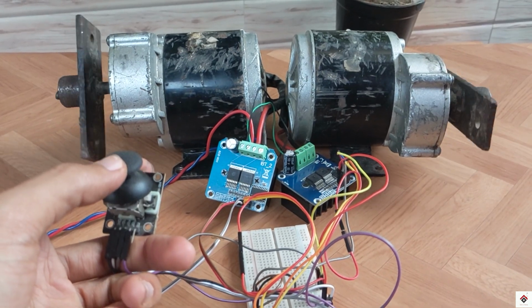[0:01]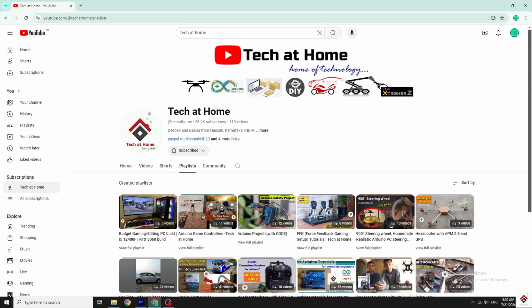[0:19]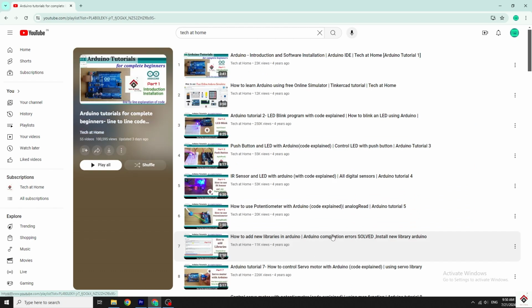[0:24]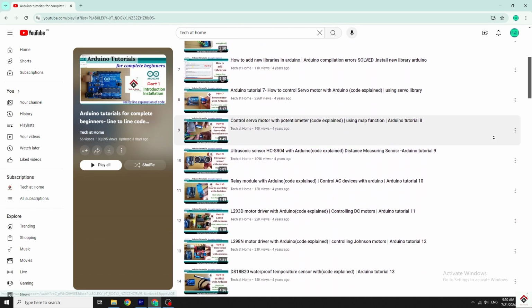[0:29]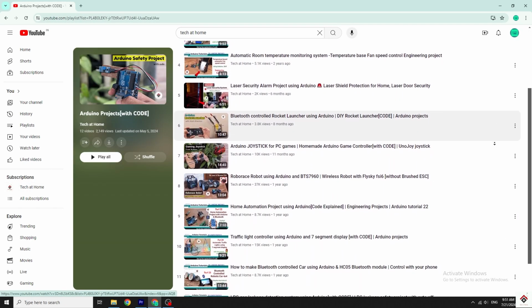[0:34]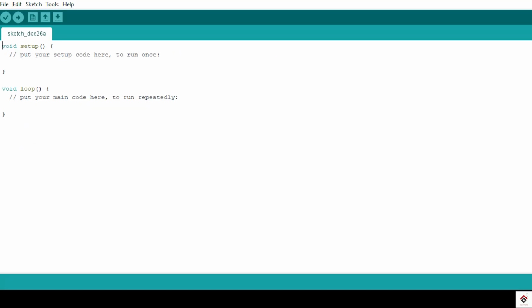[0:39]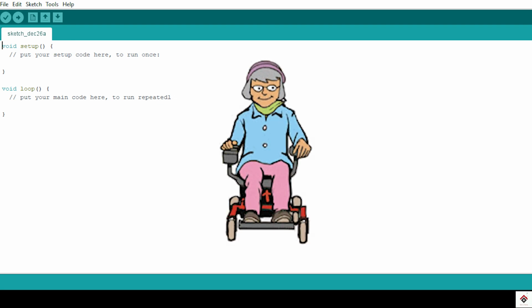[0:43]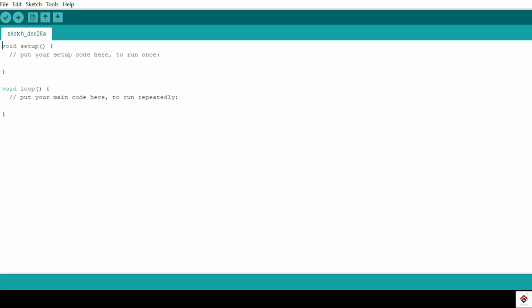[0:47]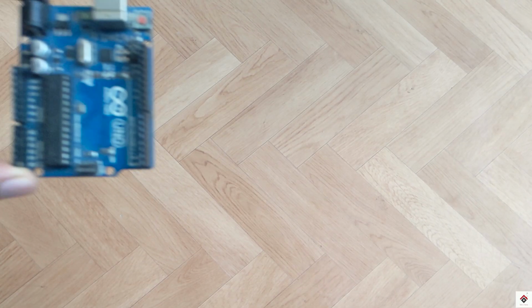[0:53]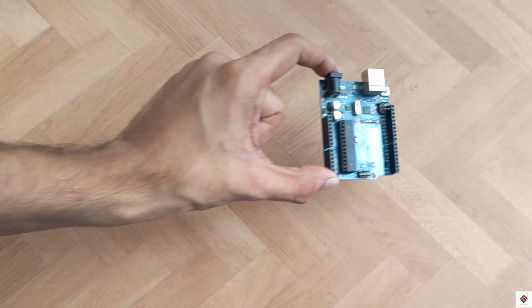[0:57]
As per subscribers' request, in today's video we'll be making a joystick controlled wheelchair project. So we'll directly have a look at the components required for this project. An Arduino board. I'm using this Uno board. You can also go with Nano, Mega or any other type.
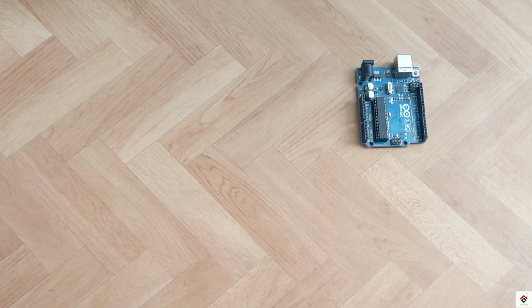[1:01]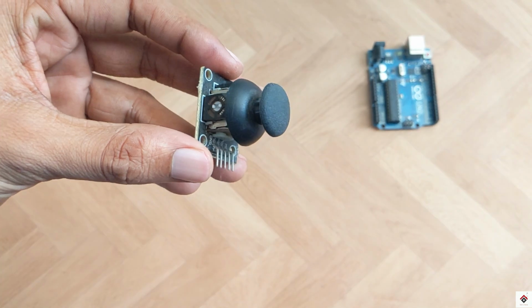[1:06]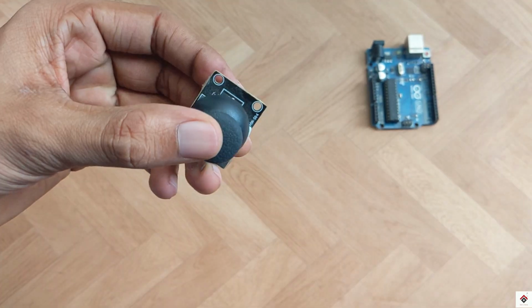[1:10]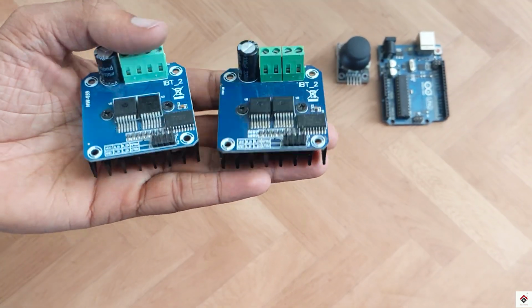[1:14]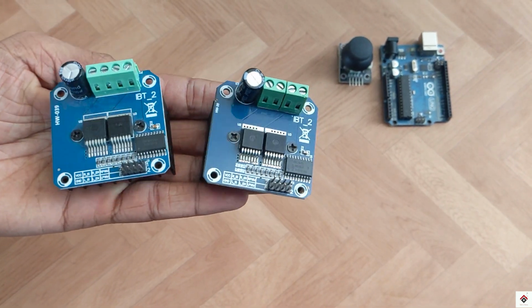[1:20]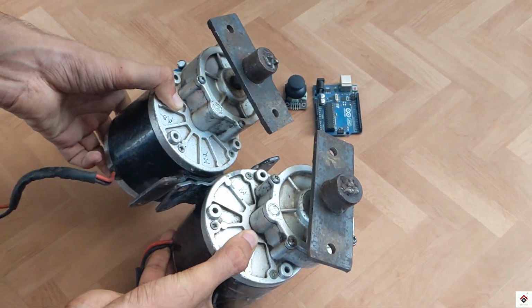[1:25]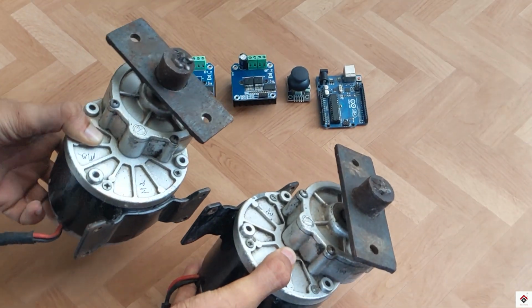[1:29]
One joystick module. Two BTS7960 motor drivers, one for the right side motor and the other one for the left side. Coming to the motors, I'm using two e-bike motors of 24 volts and 350 watts. So these are very powerful motors.
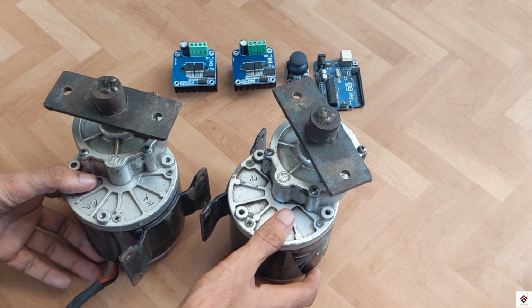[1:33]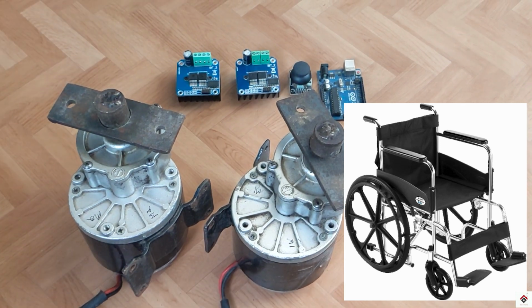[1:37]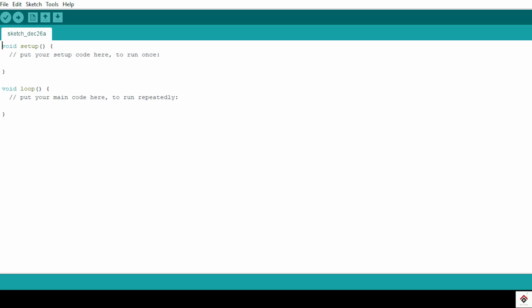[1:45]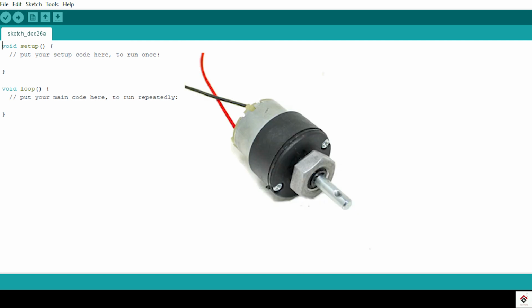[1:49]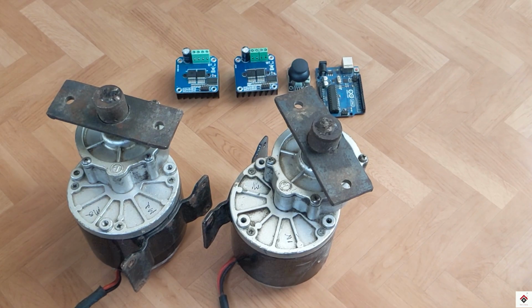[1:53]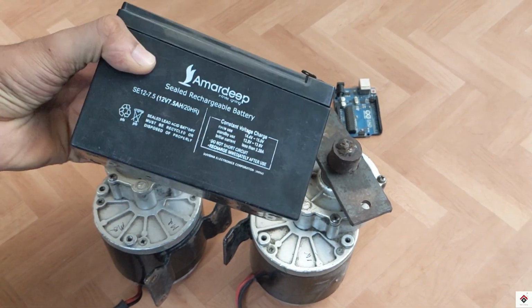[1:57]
If you have a plan to make this project on a real wheelchair, you can use the same motors since these motors can carry human weight easily. In case you are making a smaller version just for demonstration, then you can use the normal 12 volt DC gear motors. Next, we need a power supply for the motors. I'm using this 12 volts lead acid battery.
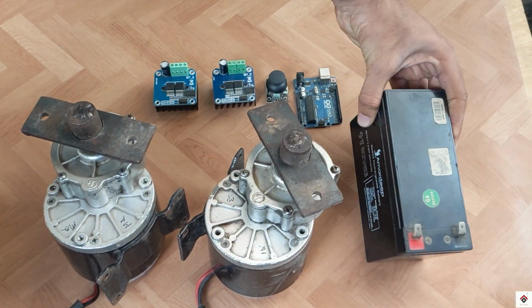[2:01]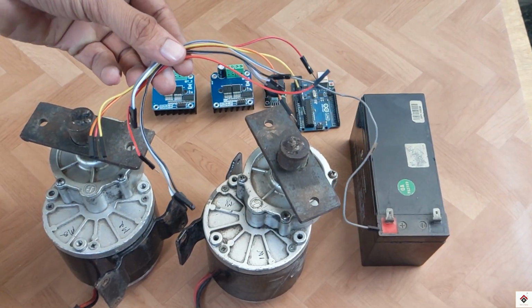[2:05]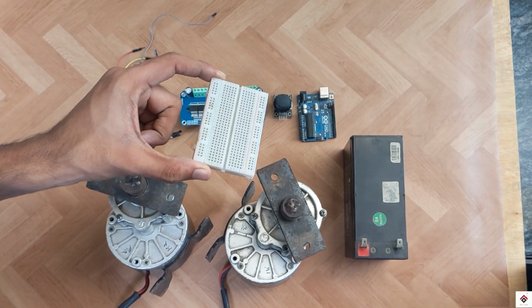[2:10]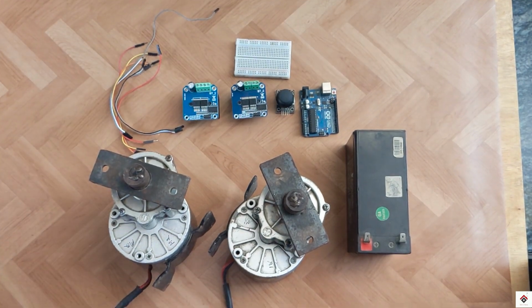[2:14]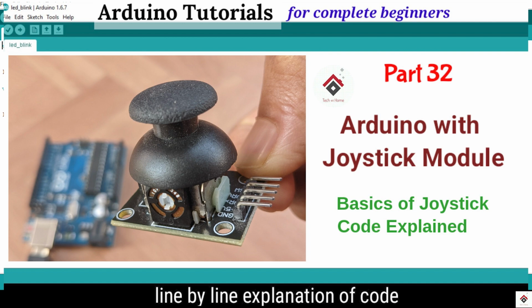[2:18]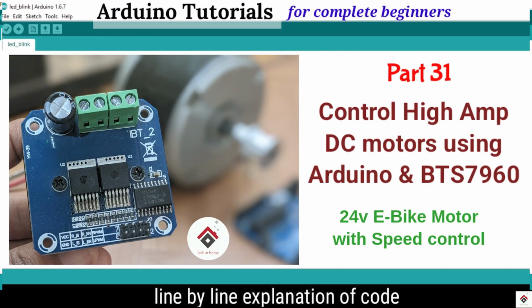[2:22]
Some jumper wires. And at last, you can also consider this breadboard for easy connections. For all the individual components shown here, we have separate step-by-step tutorials on our channel. So I recommend you to watch those videos before coming here.
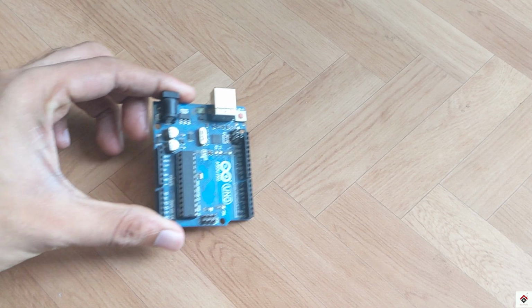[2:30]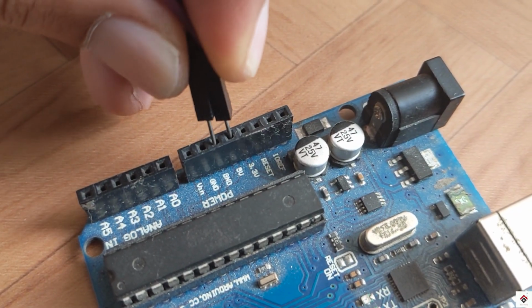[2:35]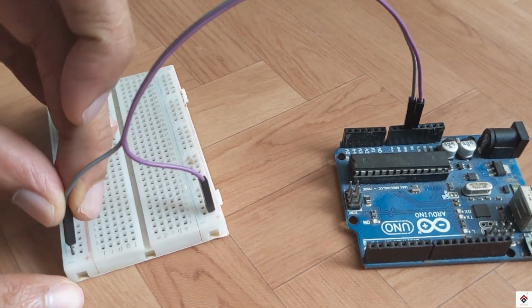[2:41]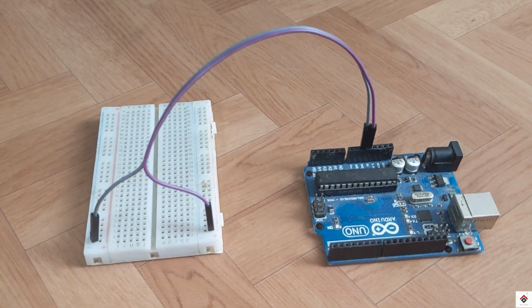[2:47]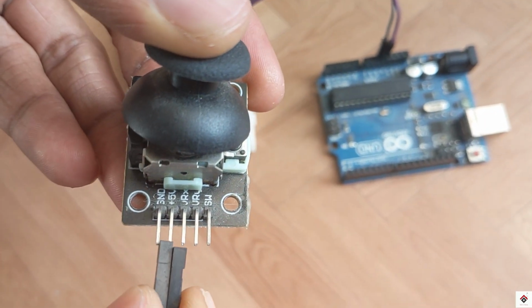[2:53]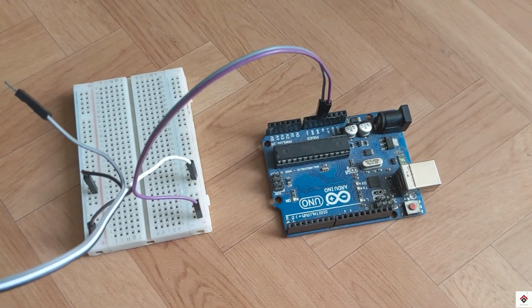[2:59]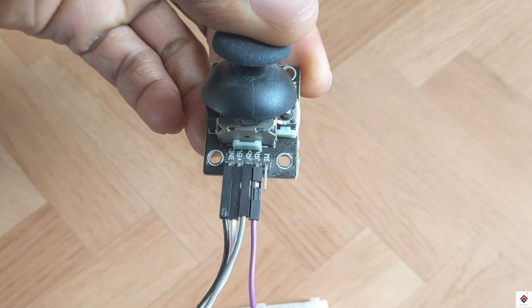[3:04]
Moving on to the connections. First, I'll take the 5 volts and ground from the Arduino board to the breadboard. Since we need it for all the components, this line is 5 volts and this is ground. From the joystick module, connect the ground and the 5 volt to the common 5 volts and ground of the breadboard. X and Y axis pins of the joystick go to Arduino analog pins A0 and A1.
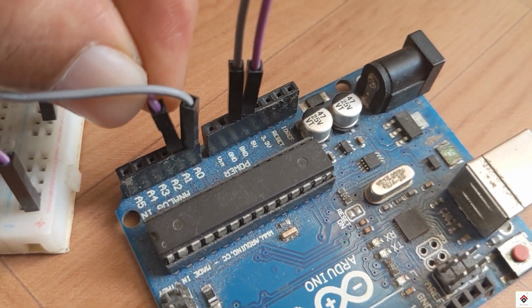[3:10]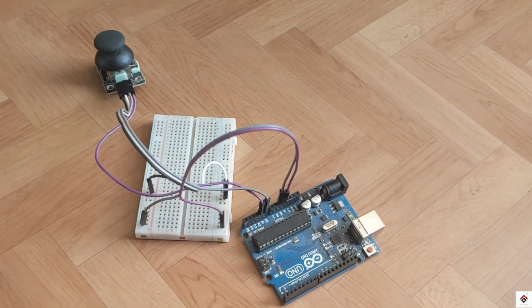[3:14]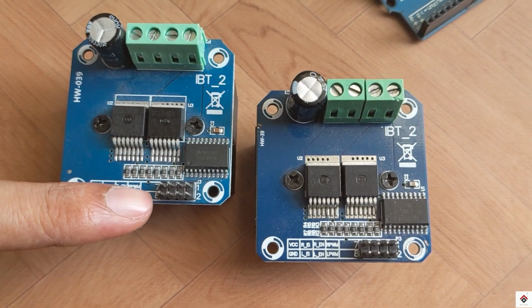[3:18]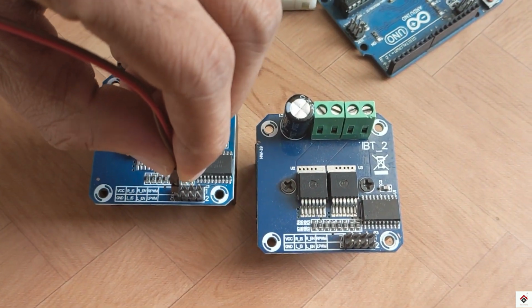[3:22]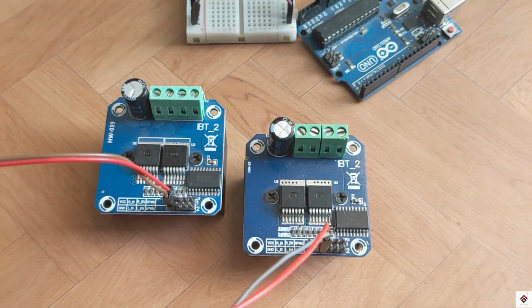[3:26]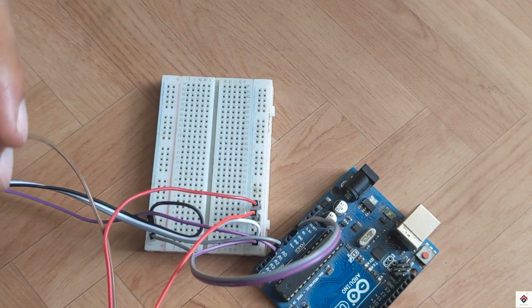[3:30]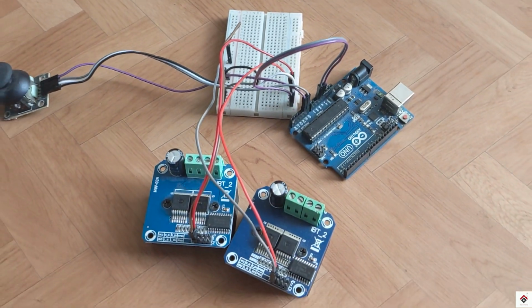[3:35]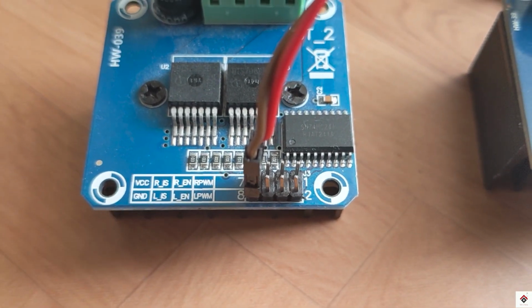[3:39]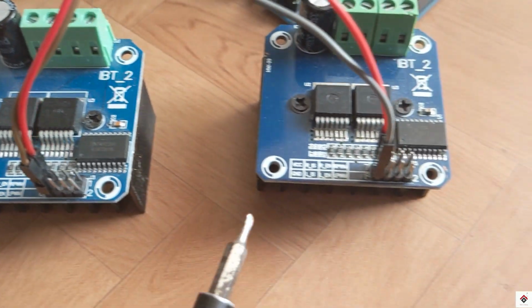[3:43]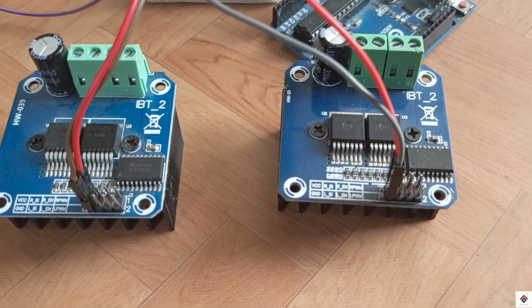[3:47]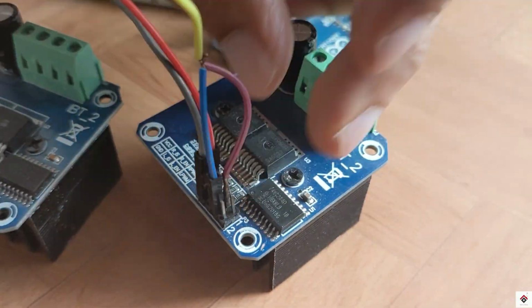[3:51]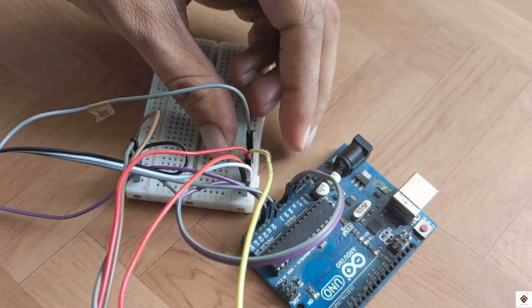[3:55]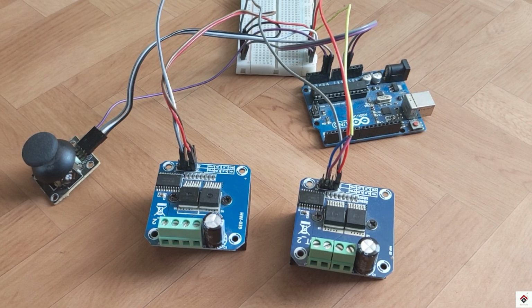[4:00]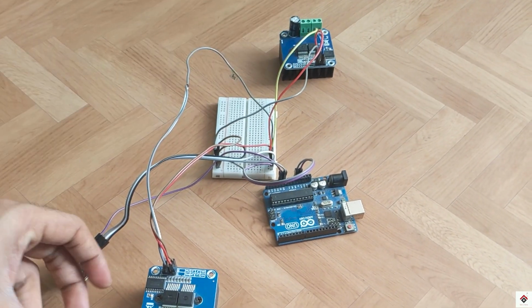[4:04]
The VCC and ground of both the motor drivers go to the common 5 volts and ground on the breadboard. Right and left enable pins, which are REN and LEN of both the motor drivers, go to common 5 volts on the breadboard. So here, this driver will be for the right motor and this one for the left motor.
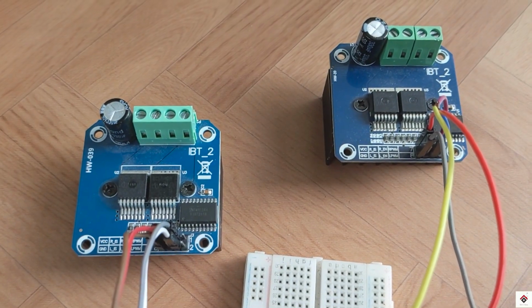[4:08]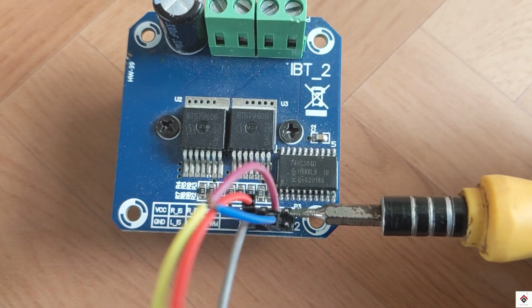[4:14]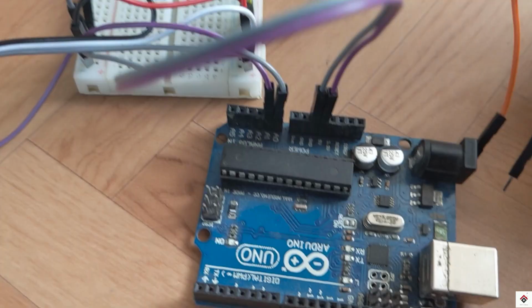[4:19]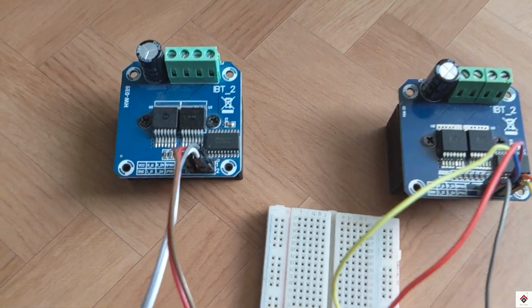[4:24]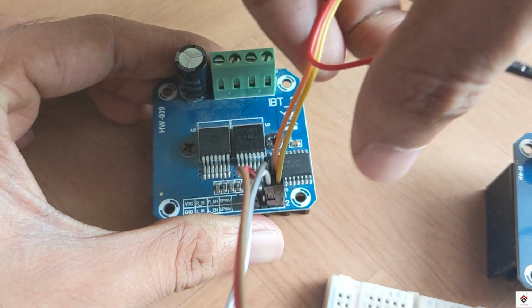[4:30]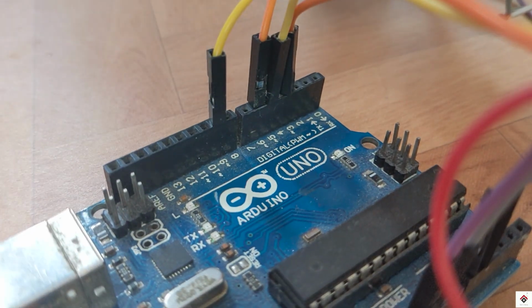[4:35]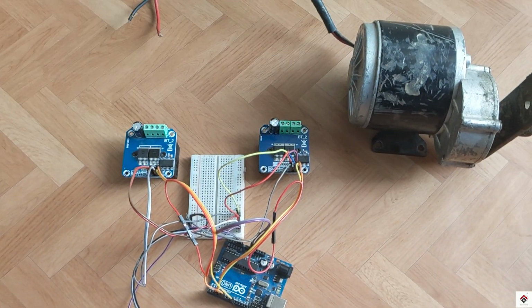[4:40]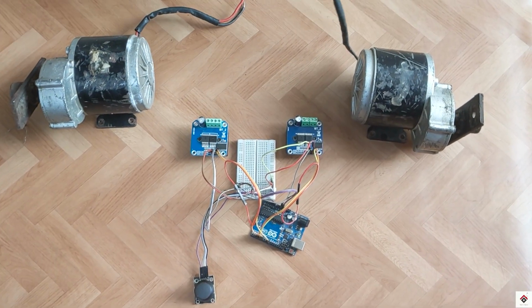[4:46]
Now, the RPWM and LPWM pins of the right side motor driver go to Arduino PWM pins 3 and 5. Similarly, the RPWM and LPWM pins of the left side motor driver go to Arduino PWM pins 6 and 9. Next, we can connect the motors to M+ and M- terminals for both the sides.
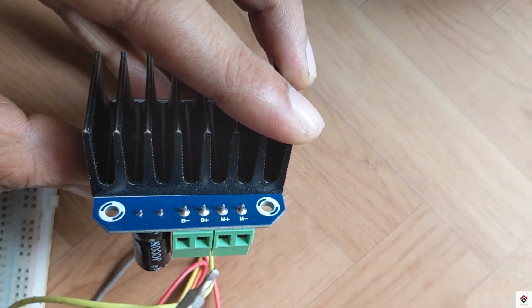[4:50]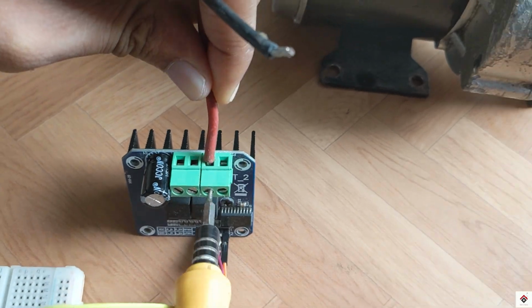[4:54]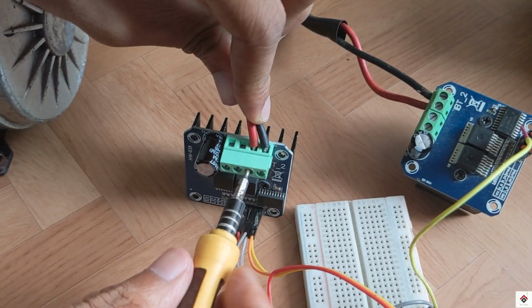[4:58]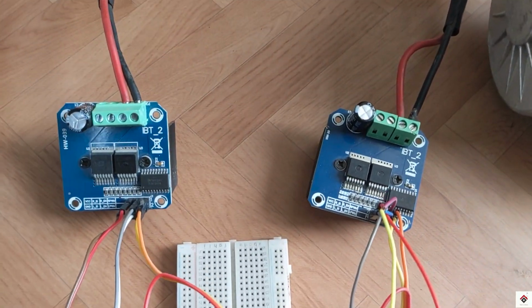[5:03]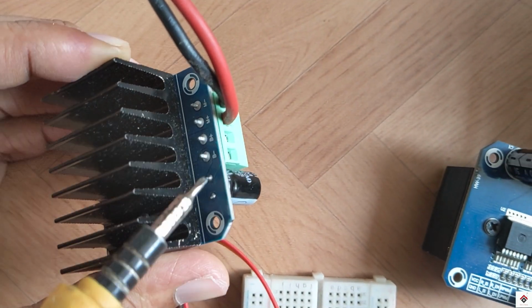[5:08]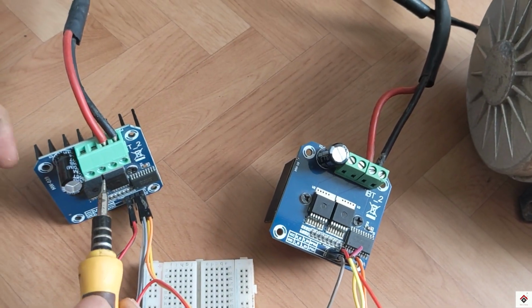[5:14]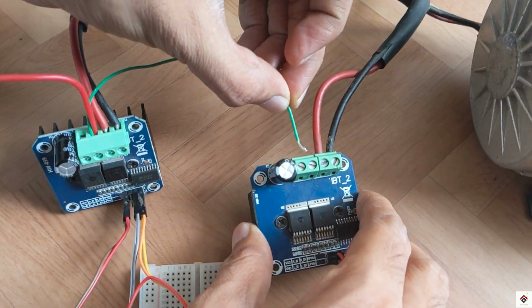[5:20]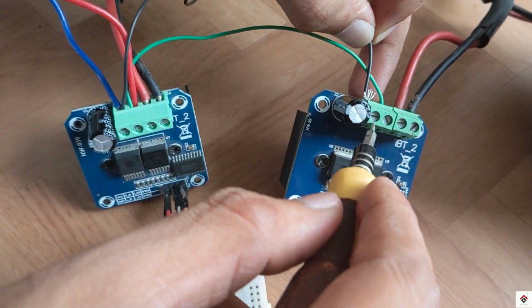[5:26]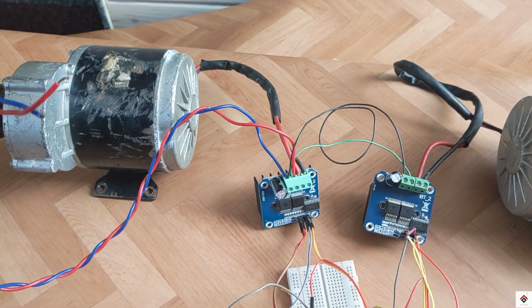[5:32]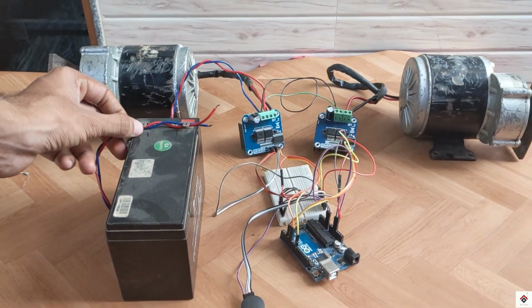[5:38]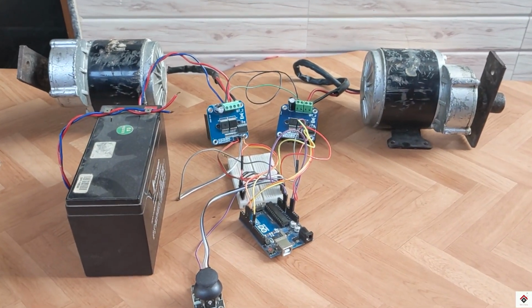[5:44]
And finally, we are left with the battery terminals B+ and B-. So I'm connecting the B+ and B- terminals of both the drivers together, B+ to B+, and similarly, B- to B-. And this common connection goes to the battery terminals. So that's all the connections. If you have any doubts, you can refer to the circuit diagram link from the description box.
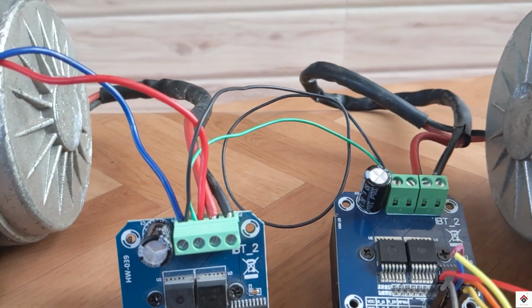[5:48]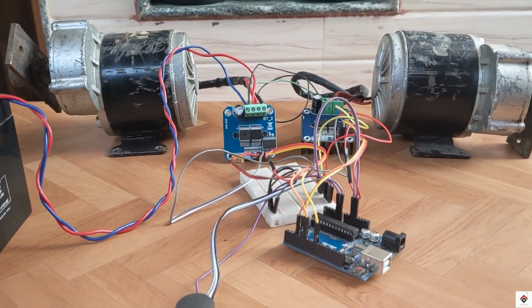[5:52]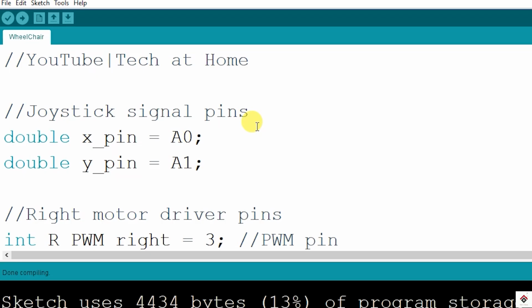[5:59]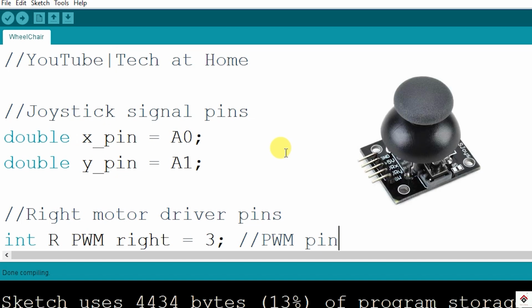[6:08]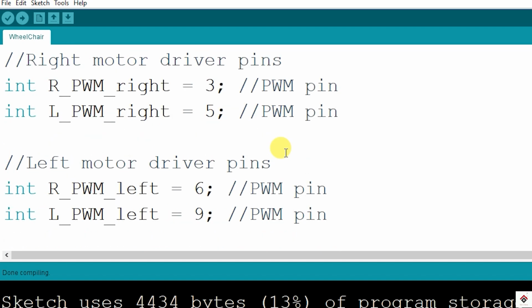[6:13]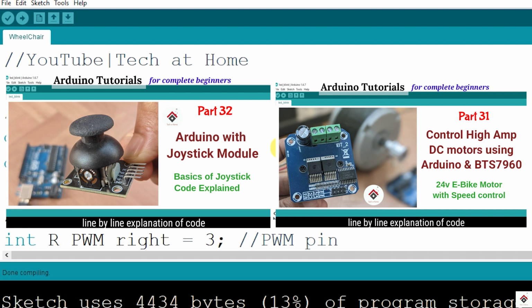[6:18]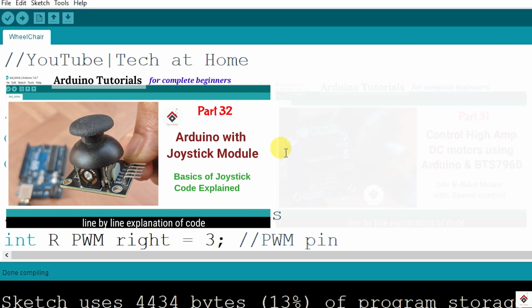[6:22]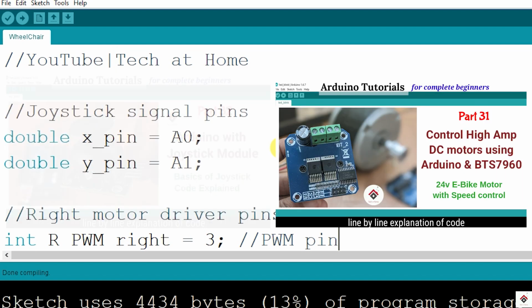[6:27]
Moving on to the code, here I'll just go through briefly the flow of the logic. Since we are using two modules, the joystick and the BTS driver, before watching this explanation, you should watch the previous two tutorials specifically on these modules. One is joystick interfacing and reading the values, and the second one is controlling the DC motors using the BTS driver. I'll leave both of these links in the description box.
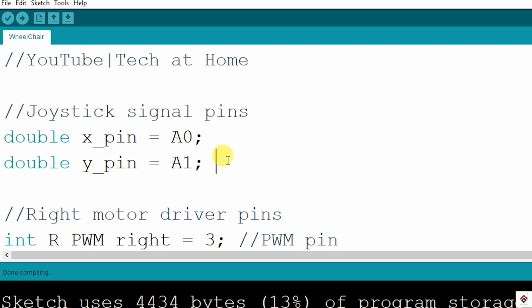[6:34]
In the code, we'll start with the declaration section. First, we have X and Y axis pins of the joystick connected to A0 and A1.
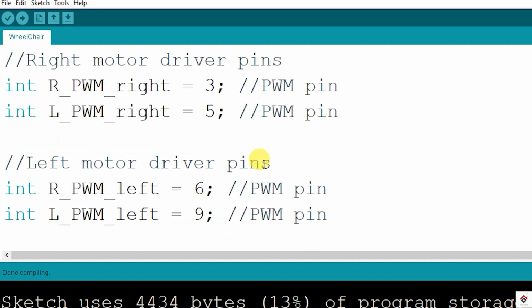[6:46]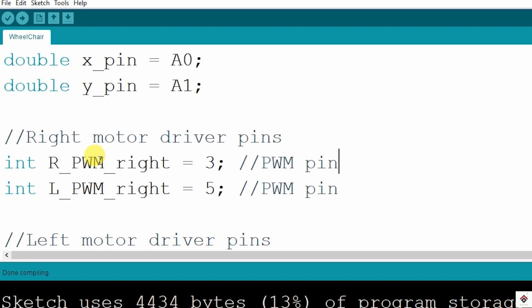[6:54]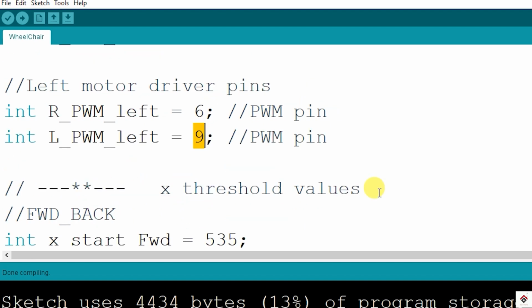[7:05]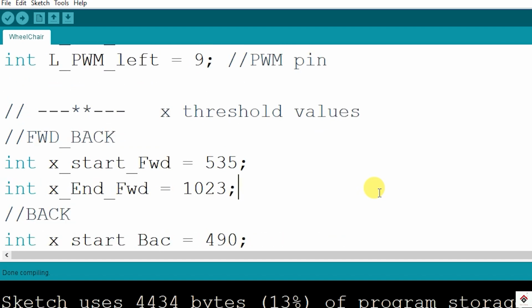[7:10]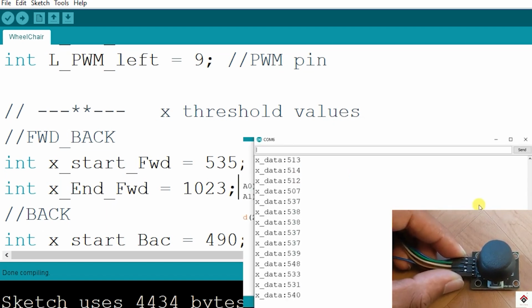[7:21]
Next, the right side motor driver pins, which are the PWM pins 3 and 5. Similarly, for the left side motor driver, again, two more PWM pins 6 and 9. And moving further, we have some constant values. The value ranges from 0 to 1023 based on the voltage drop from 0 to 5 volts. Here, at the center position, the joystick values will be around 520.
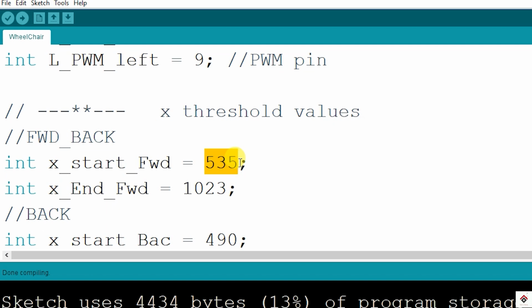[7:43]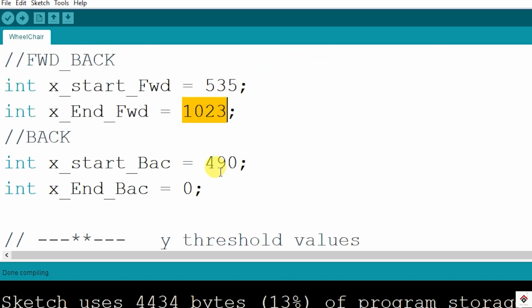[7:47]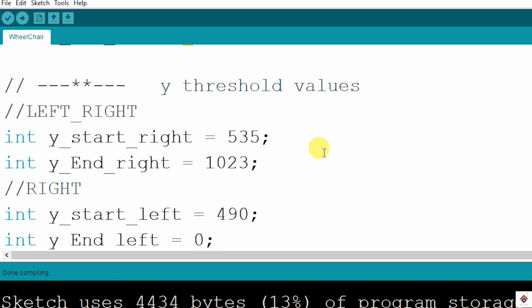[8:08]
So while moving the joystick, the minimum value we get from the ADC is 0 and the maximum value is 1023. By moving forward, I have considered the start value as 535 up to 1023. Similarly, moving the joystick backward, it will start from 490 and goes to 0. So these values we need later for mapping the speed based on the joystick movement. So I've defined it here.
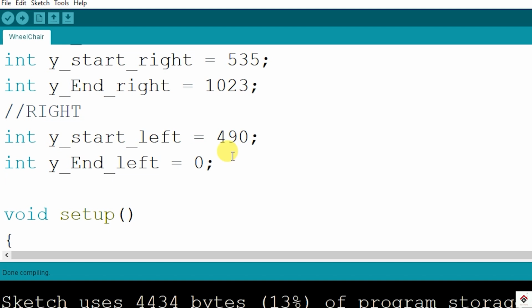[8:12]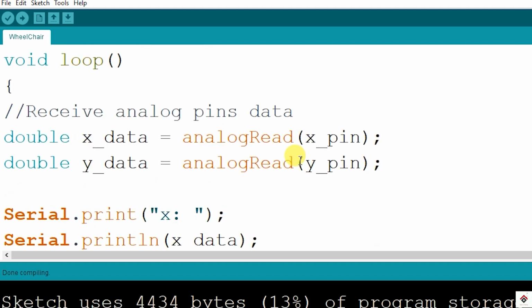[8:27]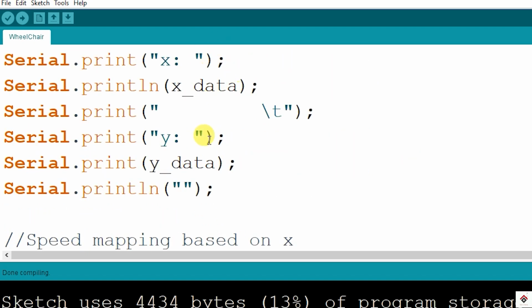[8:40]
Similarly, for the y-axis, we have the same values. In the setup function, we are setting all the pin modes to output and additionally initializing the serial communication for printing the joystick values. And finally, in the loop, first we are reading the values from both analog pins A0 and A1. Here I have added these print statements to print both X and Y axis data. This you can also comment it out.
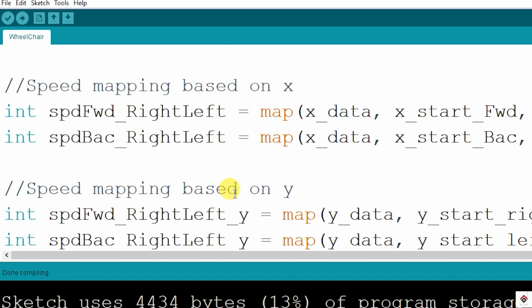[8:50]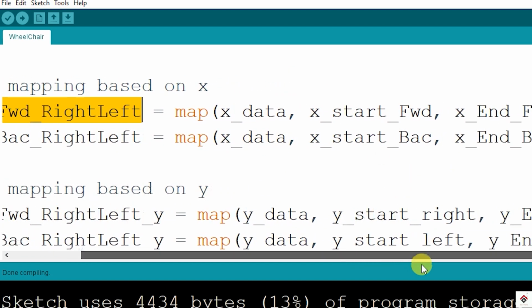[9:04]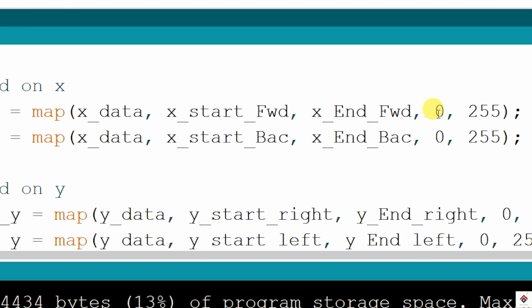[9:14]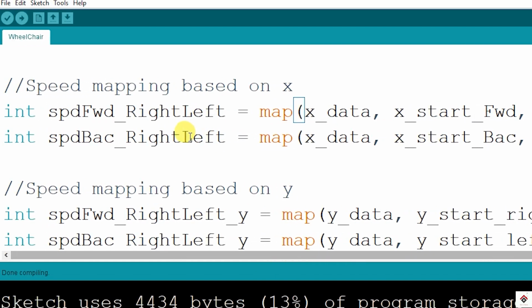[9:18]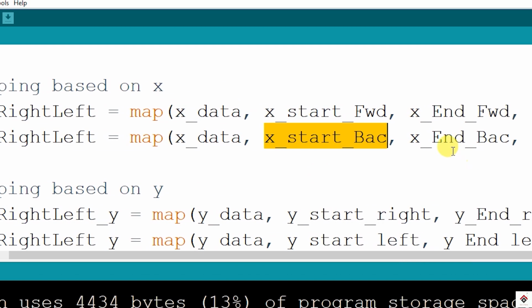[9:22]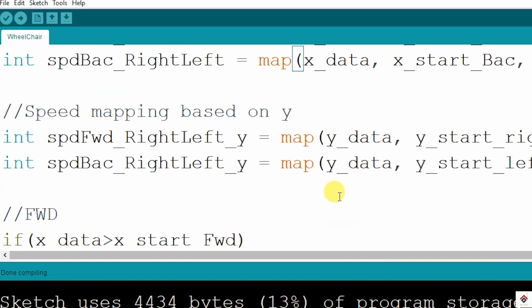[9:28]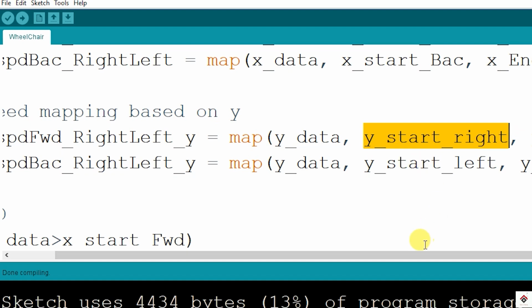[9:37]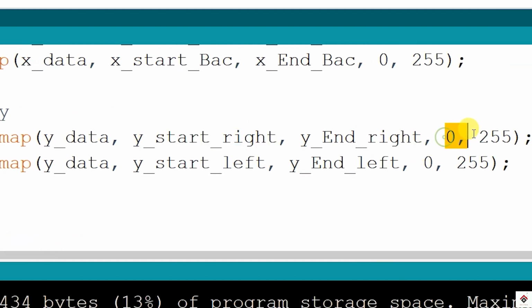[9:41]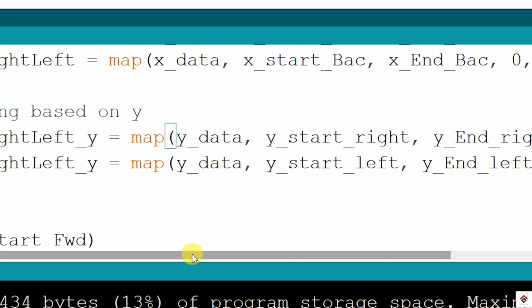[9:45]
Next, we have speed mapping. We are using the X axis data to move the wheelchair in the forward and backward direction. So first, for the forward, we'll be mapping 535 to 1023 values to the range of 0 to 255. And similarly, for the backward direction, we are mapping 490 to 0 to the range of 0 to 255. Similarly, for the y-axis, we'll be using this data for left and right controls. Here also, we are using the same values to map to the range of 0 to 255. And after this, we have simple if-else-if statements.
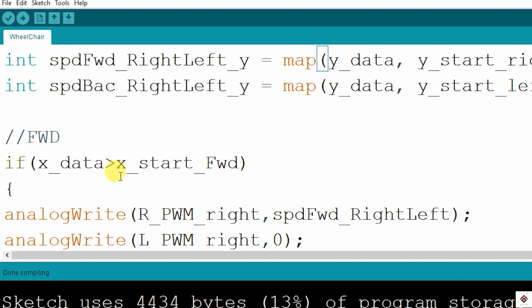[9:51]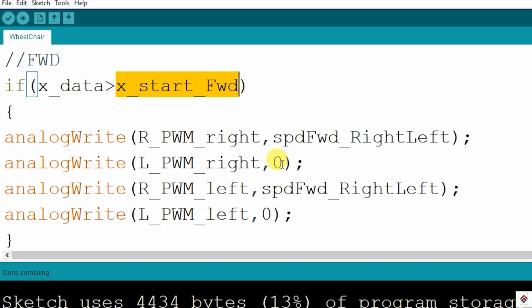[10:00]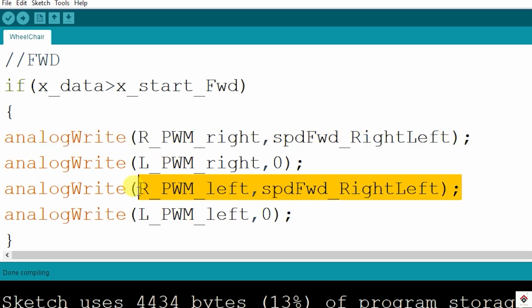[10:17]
If I'm moving the joystick to the forward direction, my x-axis data will start crossing 535 value. In that case, we have to run both the side motors in the forward direction. So that's why we can see LPWM for both the drivers are 0, and in the right PWM pin, we are passing the duty cycle values based on the speed mapping.
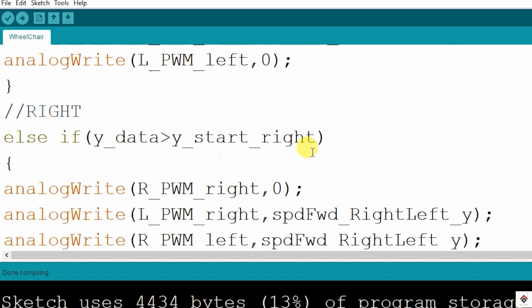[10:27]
So if my y-axis data is crossing 535, then I have to turn right, which means my right side motor should rotate backward and left side motor should rotate forward. That's why duty cycle values on the LPWM for right side driver, and I'm using right PWM pin for the left side driver.
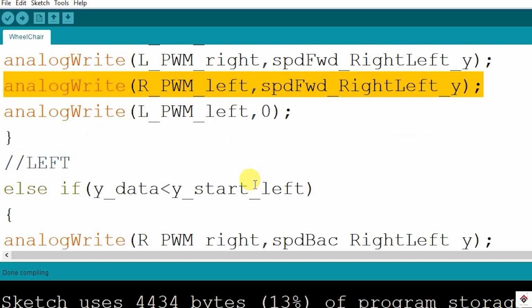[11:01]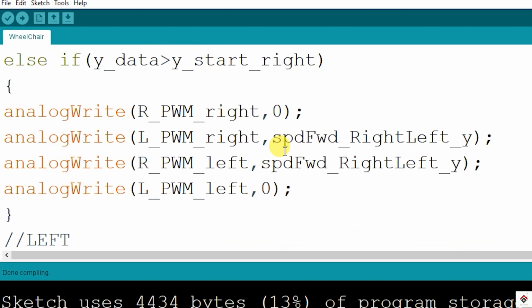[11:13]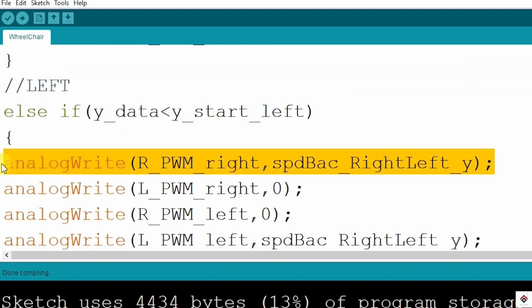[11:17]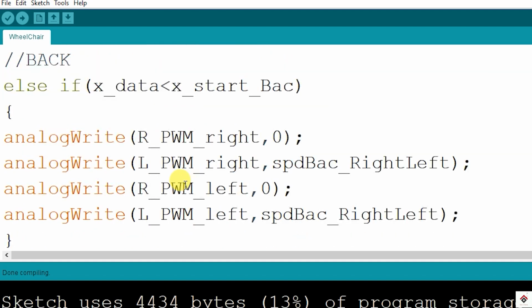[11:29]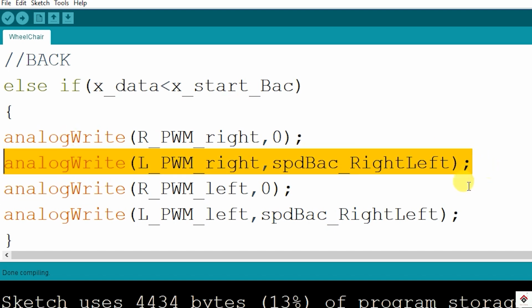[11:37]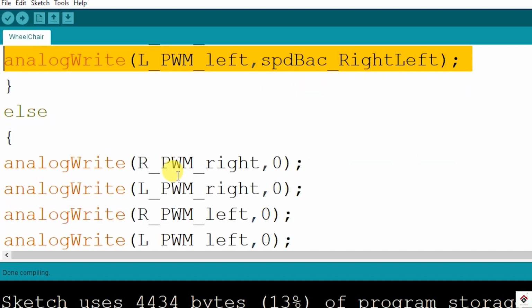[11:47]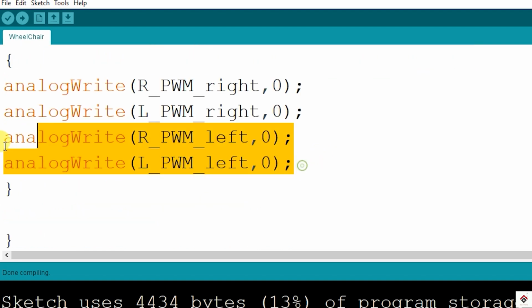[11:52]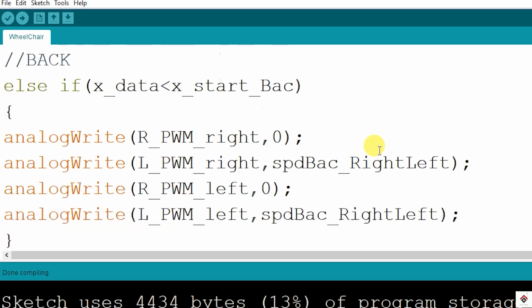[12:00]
The same way, my y-axis data, if it's going less than 490, then we have to turn the wheelchair left. So it's just reverse of the right direction. Right side motor will be rotating in the forward direction and left side motor in the backward direction. And at last, for the backward, if my x-axis data is going less than 490, then for both the side motors, I have to pass duty cycle for LPWM pins. In any of other cases, we are simply making all the PWM values to zero so that motors stay at rest. So this is how the code works.
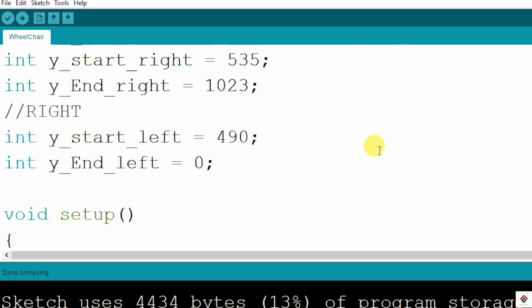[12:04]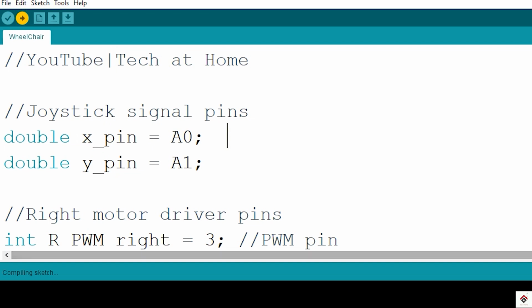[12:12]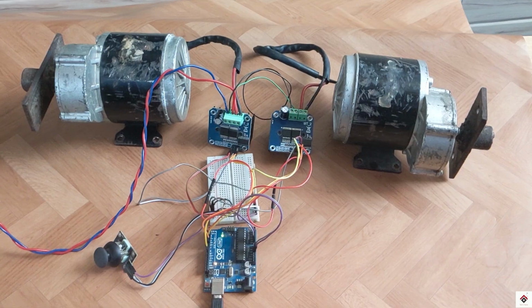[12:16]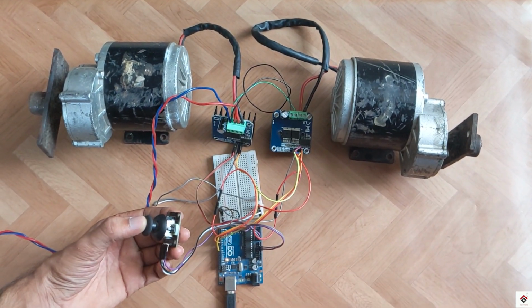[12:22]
So let's upload this and we'll see how it works. Just for the demonstration purpose, I'm using a 12 volts battery as a motor supply. Therefore, our motors will be running with slower speed. If I move the joystick forward, so both motors are moving forward. And this is the backward direction. Both the motors are running backward. This is for left. And finally, right. In all four directions, I'm also able to control the motor speed.
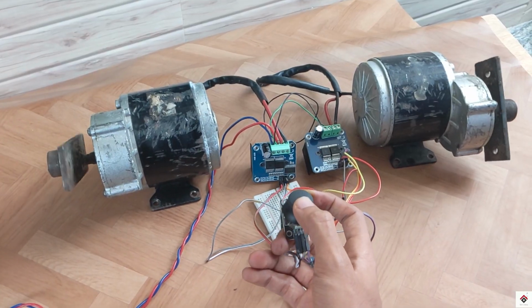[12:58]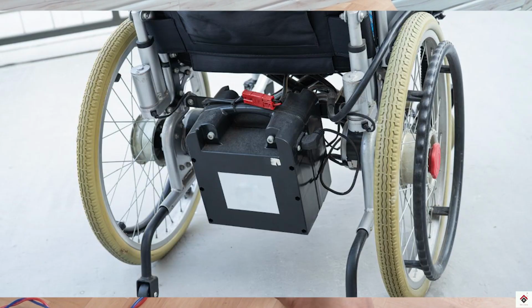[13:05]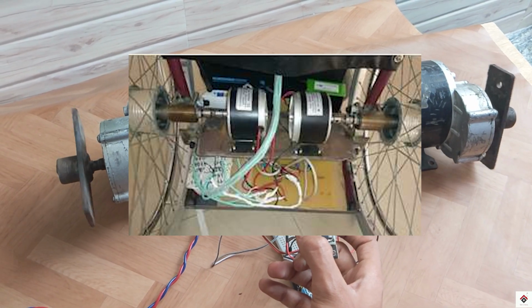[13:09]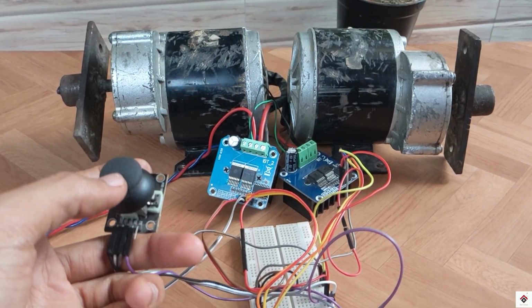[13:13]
So this whole setup, you can install it on the real wheelchair by doing some mechanical modifications for the motor shaft. So this is all about the joystick controlled wheelchair.